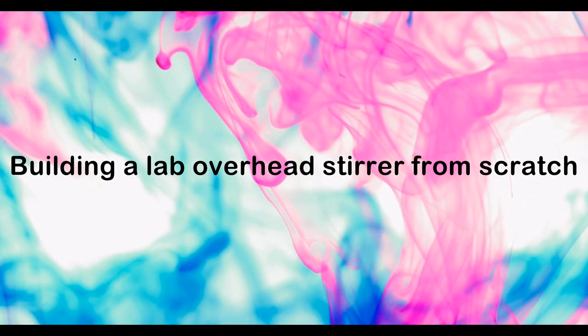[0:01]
High-quality overhead stirrers are usually much more expensive than magnetic stirrers. Therefore, I will show you today how to build such a stirrer yourself at a fraction of the cost.
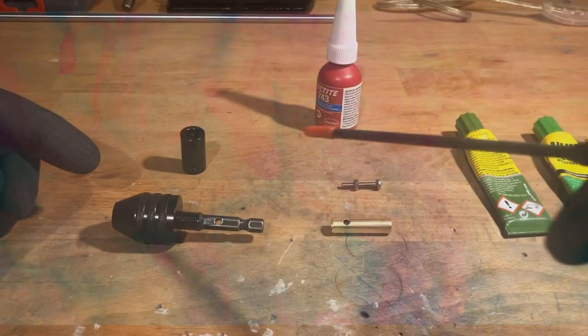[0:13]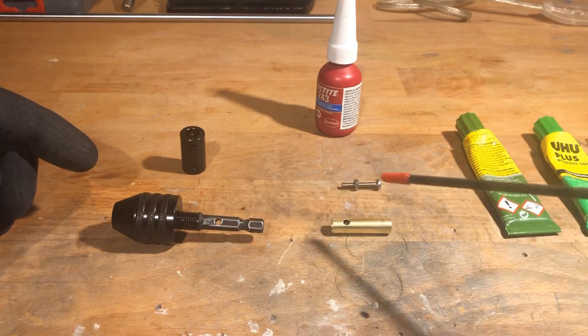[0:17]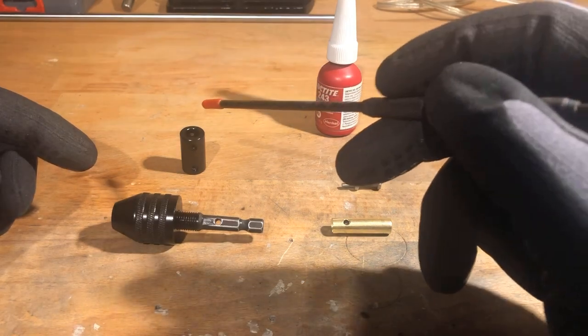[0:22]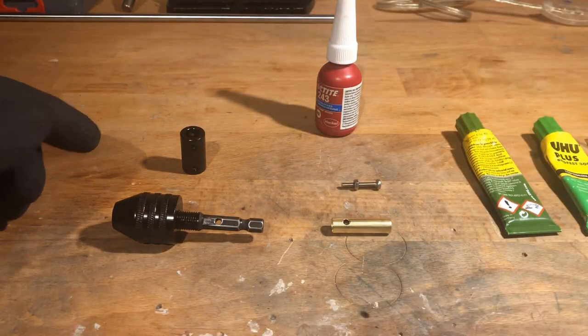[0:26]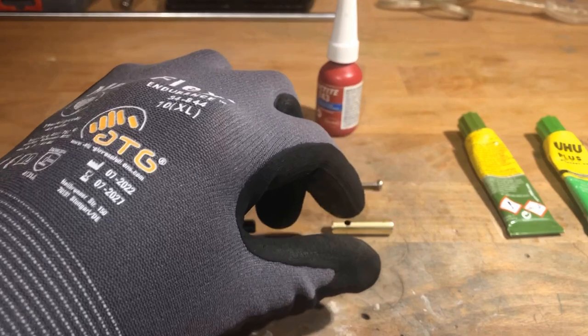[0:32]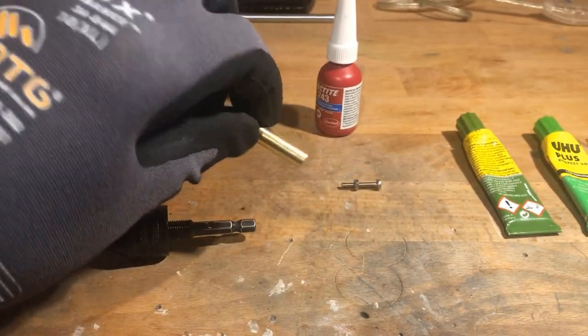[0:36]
To get started, I drilled a 3mm hole in the 1/4 inch hex shaft of a mini quick-release drill chuck. I also drilled a matching hole in a piece of brass tubing with an outside diameter of 8mm and an inside diameter of 7mm. The drill chuck is suitable for bits from 0.8 to 8mm in diameter and sells for a few bucks.
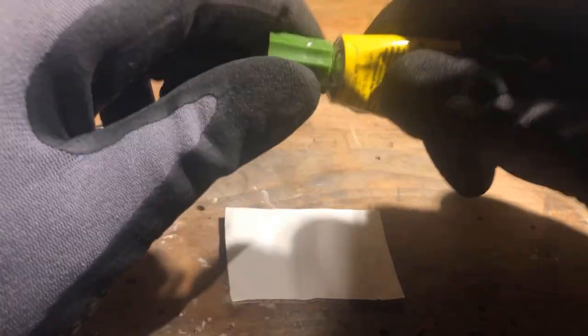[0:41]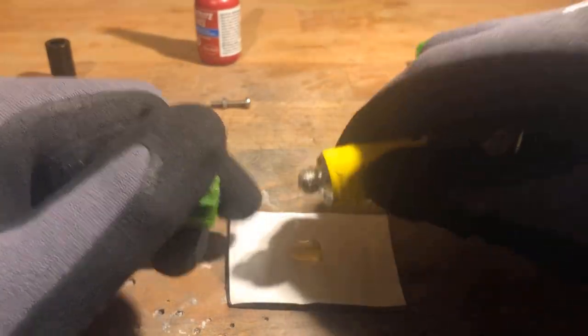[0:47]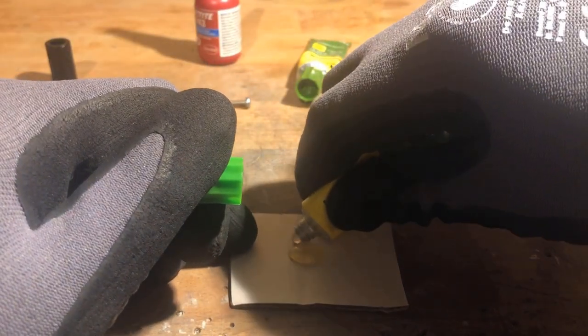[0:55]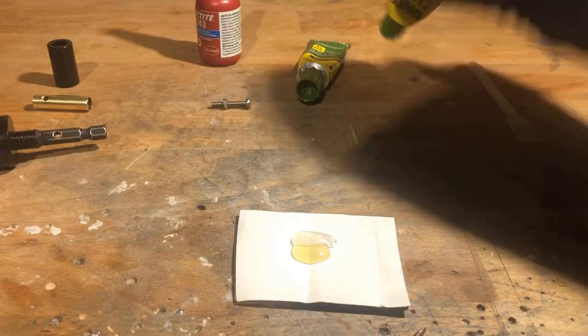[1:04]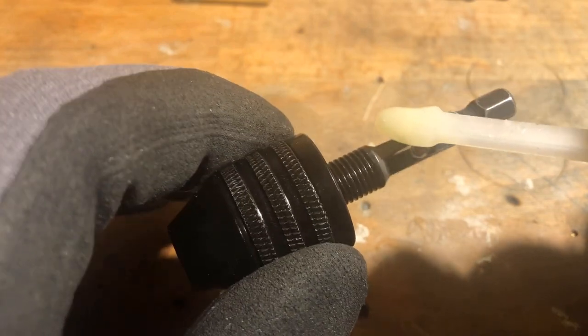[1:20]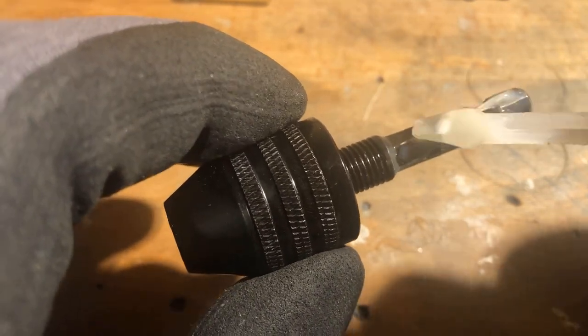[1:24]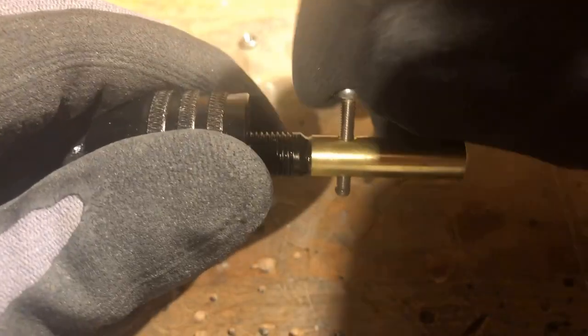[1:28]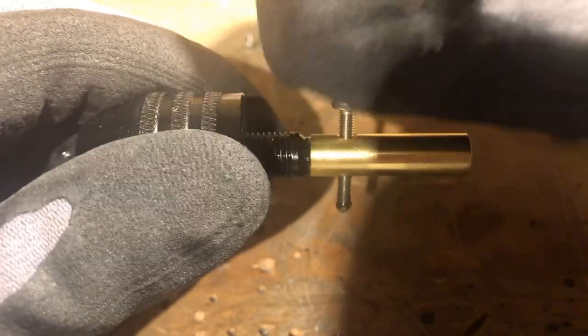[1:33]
The two-component epoxy resin is used to fill the gaps between the hex shaft and the brass tube. The connection of the hex shaft and the brass tube was then secured by an M3 stainless steel screw.
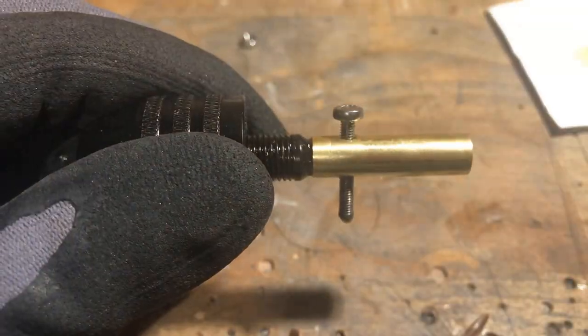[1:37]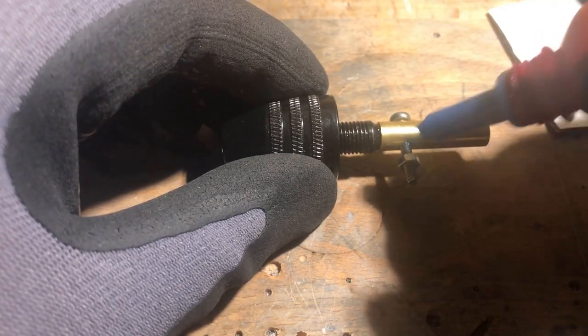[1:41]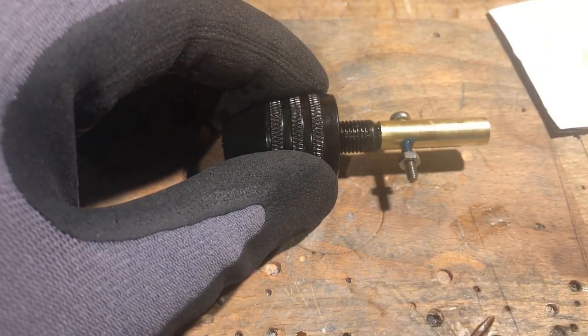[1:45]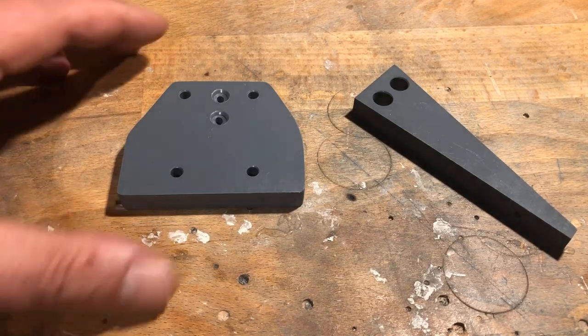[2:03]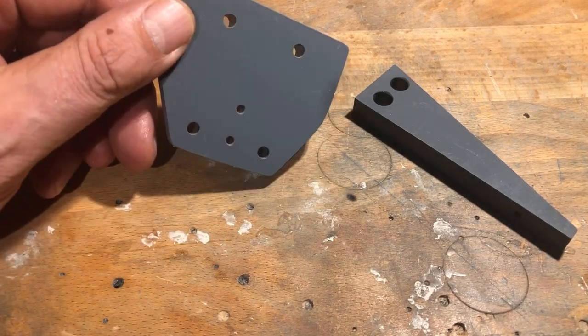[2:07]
Meanwhile, I collected or made more parts. Among them a 12 volts 130 rpm DC worm gear motor and a surface mount junction box made from ABS with the dimensions of 100 by 68 by 50 millimeters. These two parts were cut out of a 10 millimeters thick PVC sheet with a fret saw, sanded and drilled with appropriate holes.
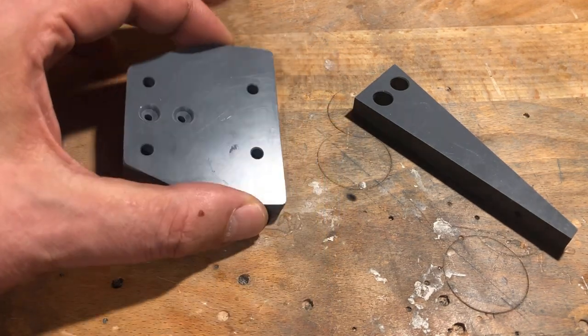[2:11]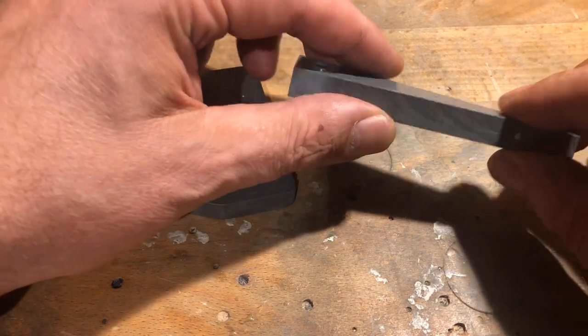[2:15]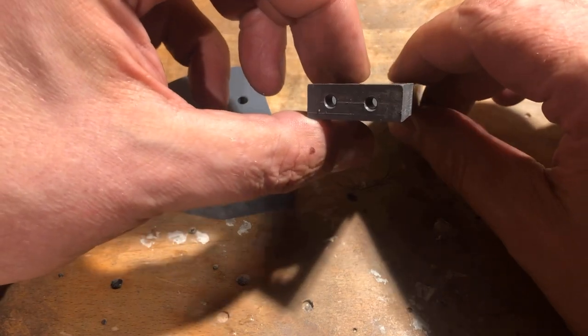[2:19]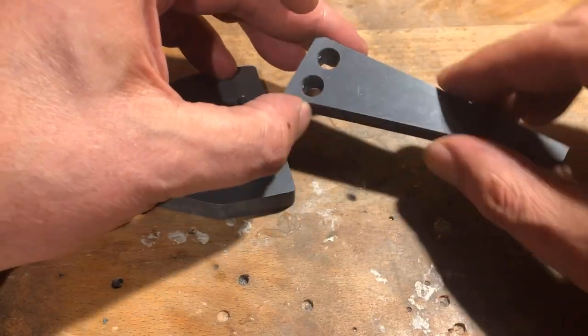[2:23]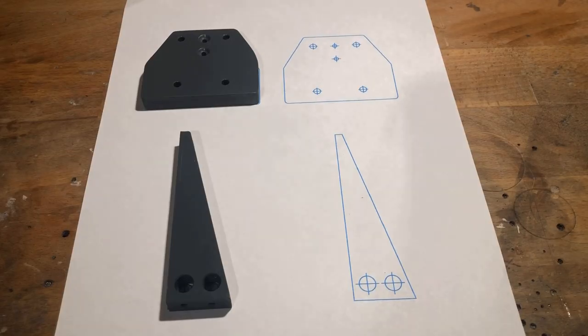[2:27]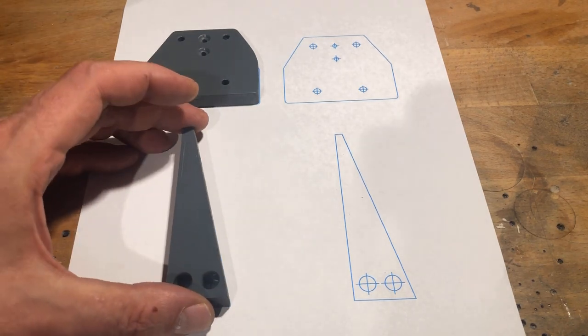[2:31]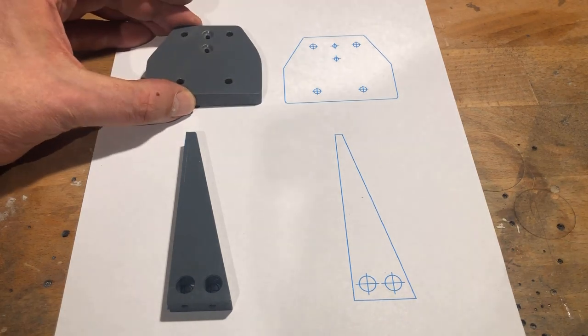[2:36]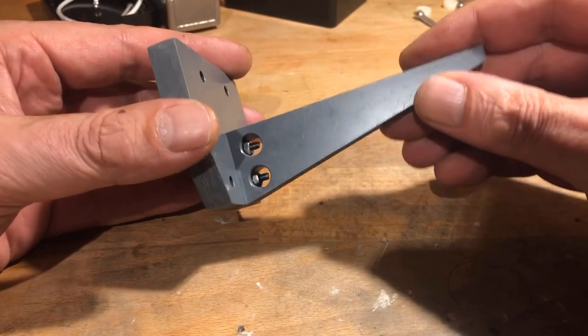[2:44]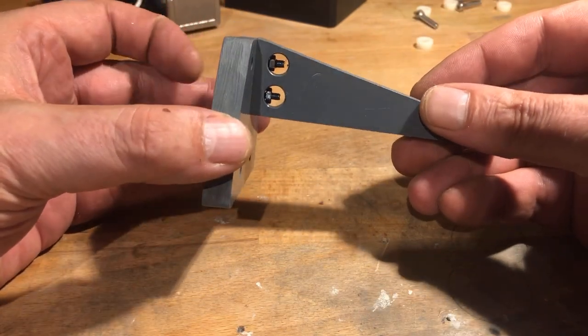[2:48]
As usual, I first created a drawing in Inkscape, printed it out in 1:1 scale and then spray glued the templates onto the PVC sheet. With this method, it is possible to produce parts with very good precision. The two parts were then bolted together using two M3 stainless steel flathead bolts and nuts and secured with thread locking varnish.
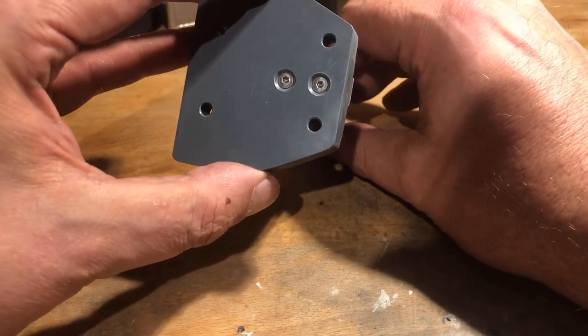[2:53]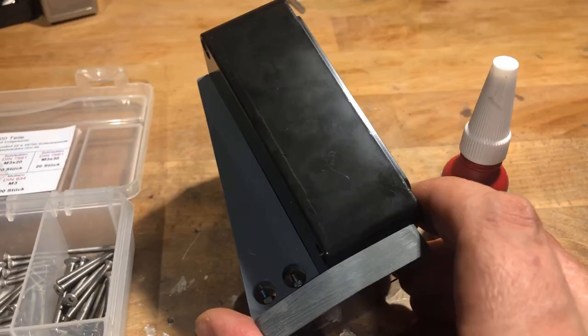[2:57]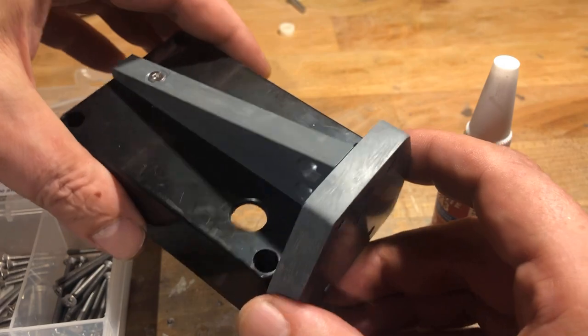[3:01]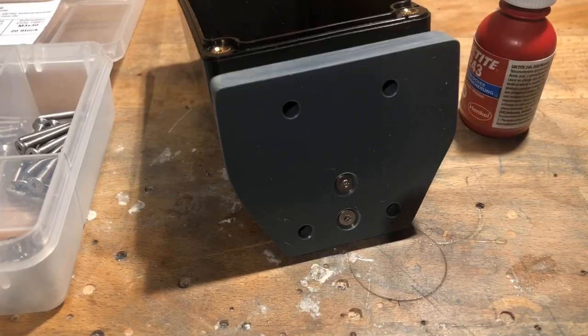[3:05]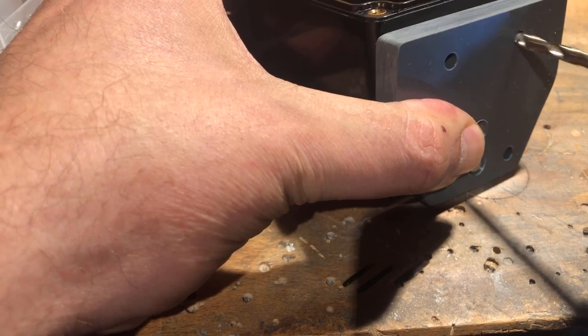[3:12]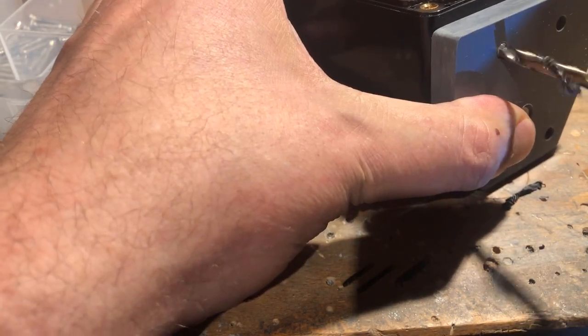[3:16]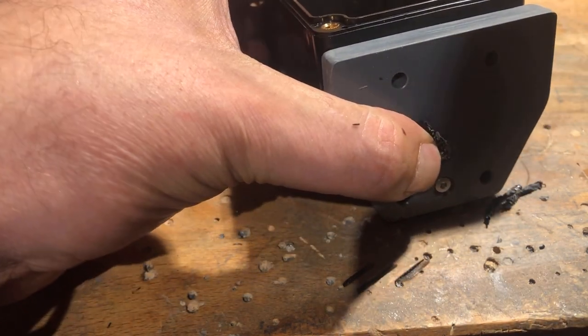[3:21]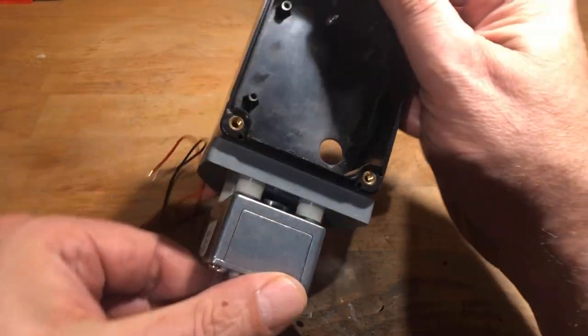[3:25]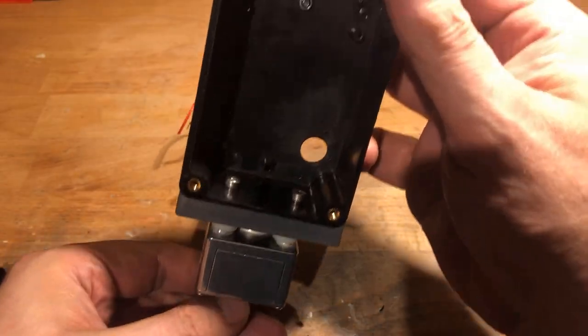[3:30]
Another M3 stainless steel flathead bolt and nut was used to screw the box to the bracket. Now two more mounting holes could be drilled into the box. Using 4 M4 stainless steel screws and 6mm nylon spacers, the box was mounted to the gear motor.
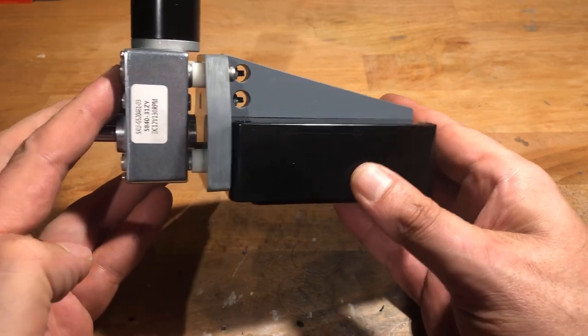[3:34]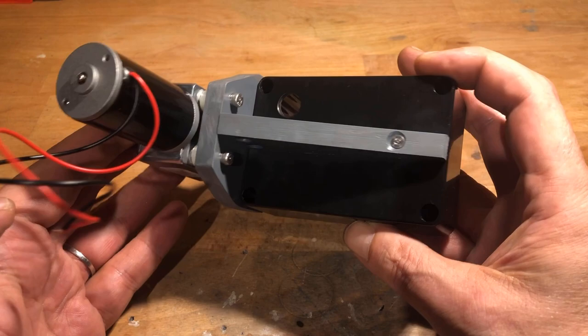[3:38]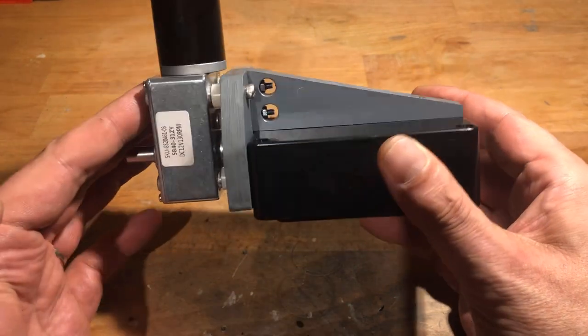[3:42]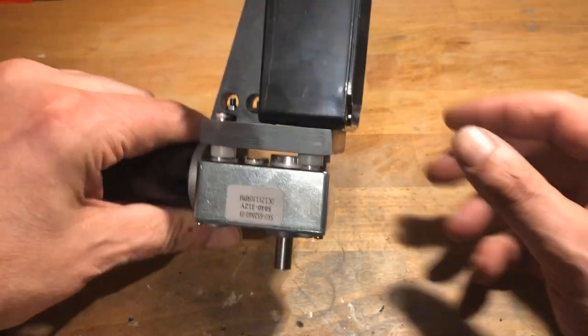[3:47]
By the way, for those who think 130 rpm is too slow, the gear motor is available with many other speeds. However, the maximum speed should not be too high to prevent liquids from splashing out when stirring.
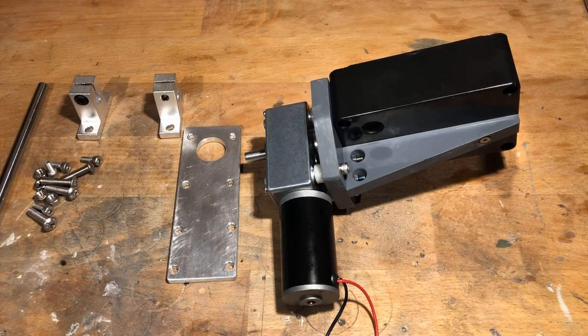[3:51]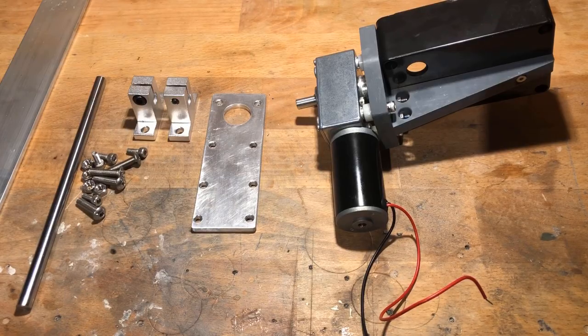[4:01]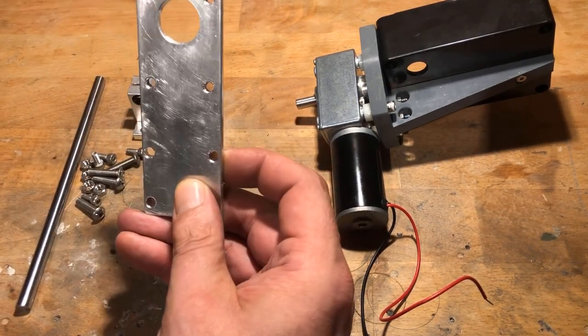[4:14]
Next, we need two 8mm axle brackets, an 8x200mm stainless steel rod, a custom bracket, 4 M5x20mm stainless steel screws and nuts, and 4 M4x10mm stainless steel screws. The custom bracket is made from a 4x40mm aluminum flat bar. Again, I created a cutting and drilling template in Inkscape and attached it to the flat bar with spray adhesive.
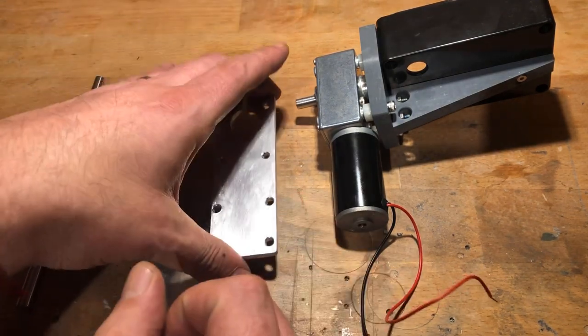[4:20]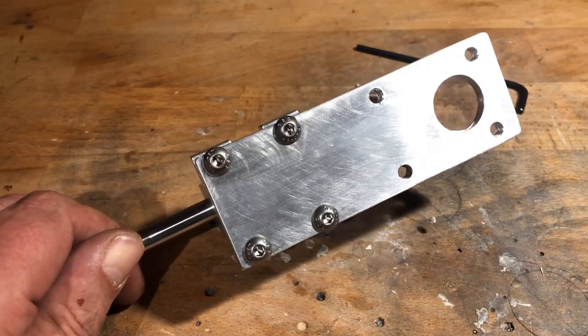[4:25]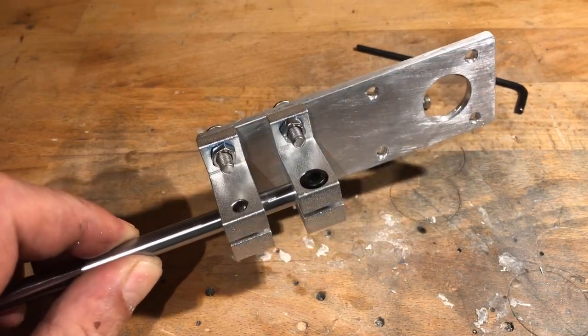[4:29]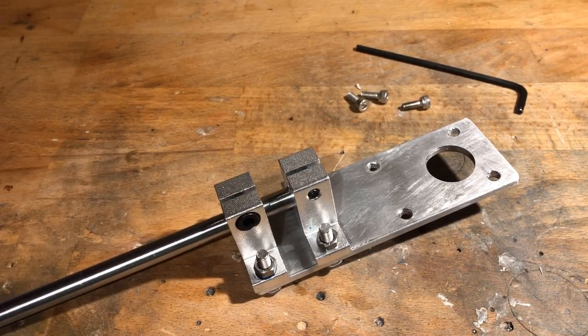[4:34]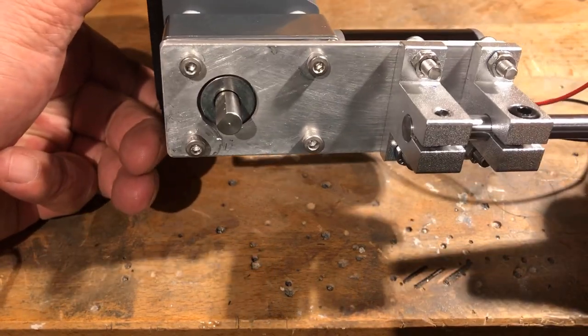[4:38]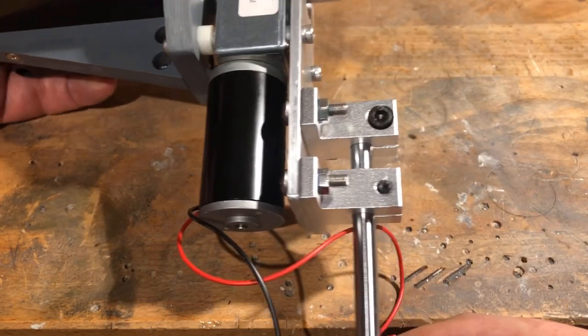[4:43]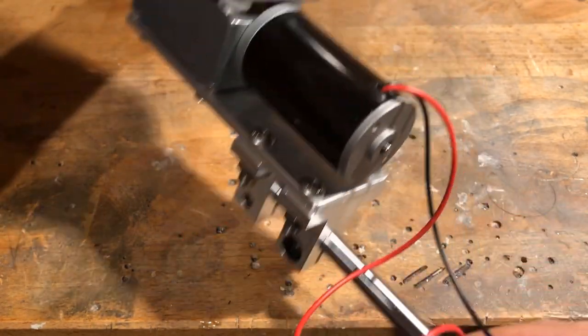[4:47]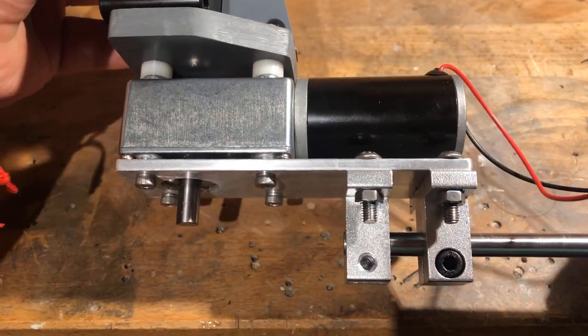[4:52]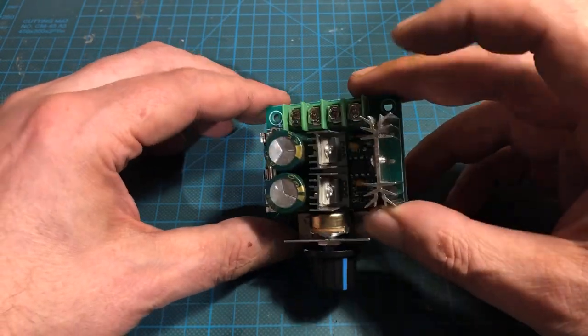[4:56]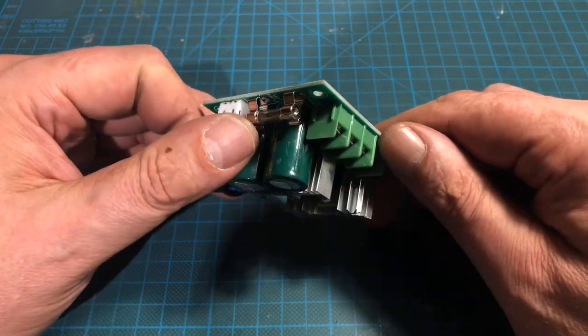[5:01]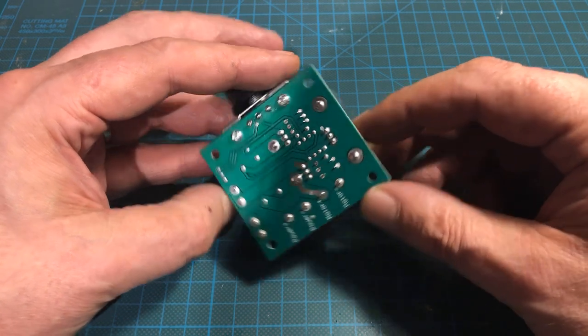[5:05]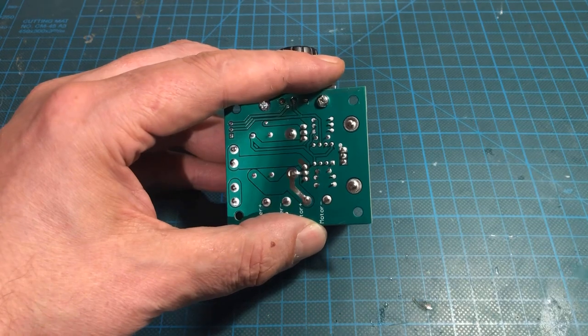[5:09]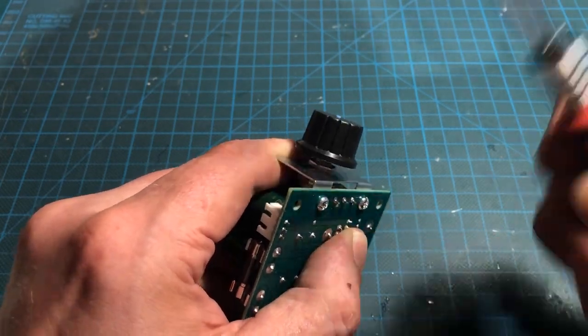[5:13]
I use a 10 amps PWM DC motor speed controller. The gear motor draws no more than 2 amps in operation, but since the motor driver is in a box, I don't want it to get hot, plus the stall current always has to be considered when dimensioning the motor driver. The potentiometer has to be removed.
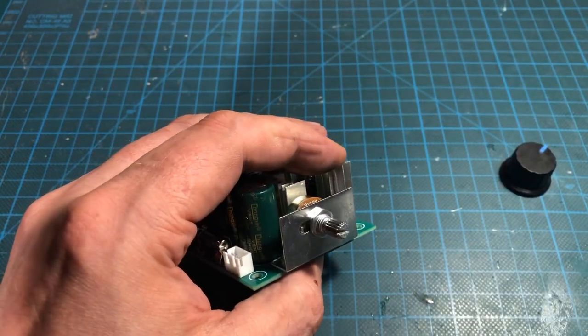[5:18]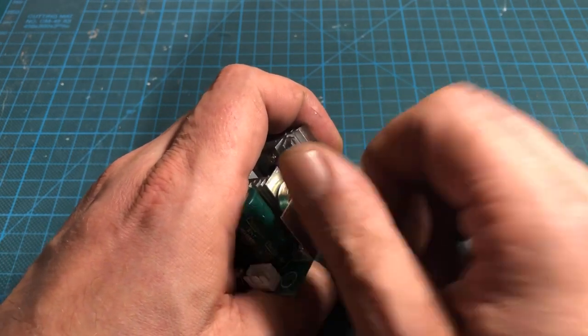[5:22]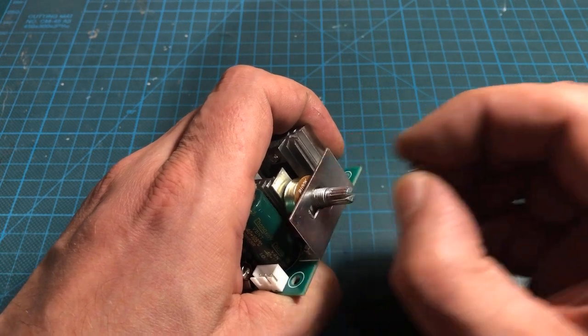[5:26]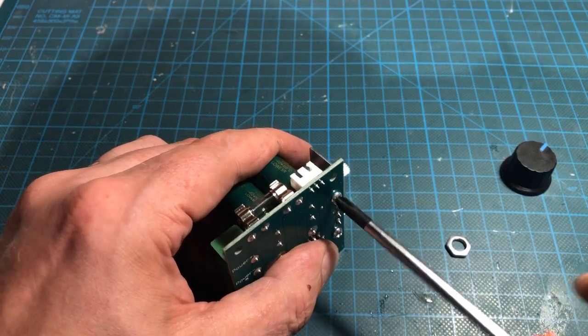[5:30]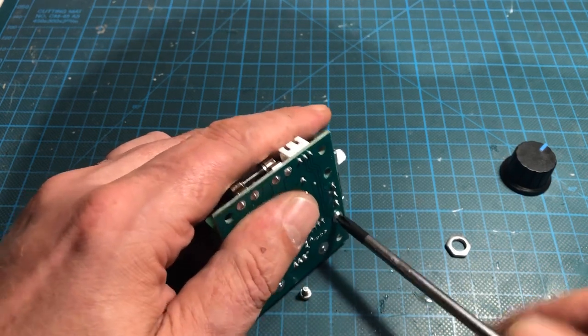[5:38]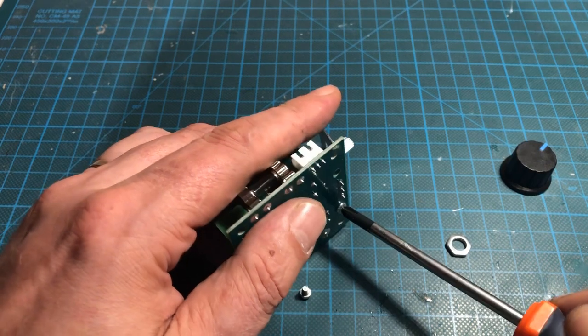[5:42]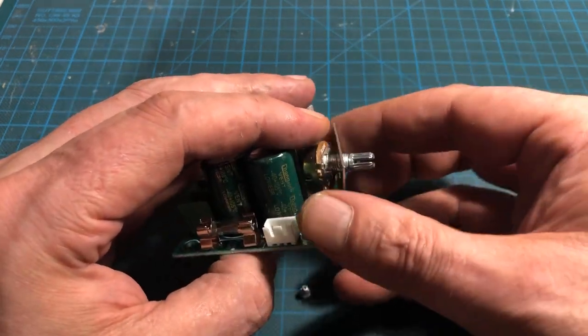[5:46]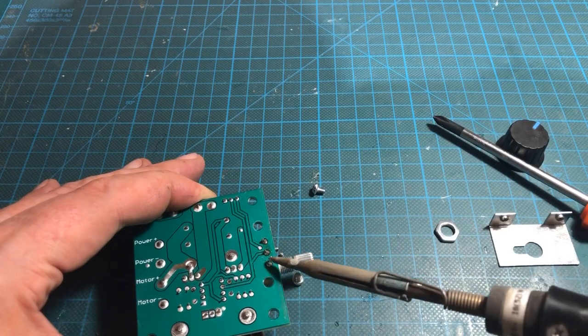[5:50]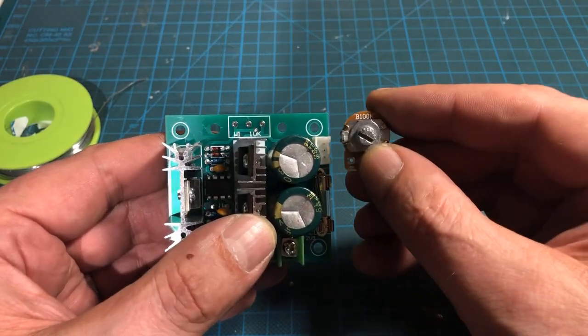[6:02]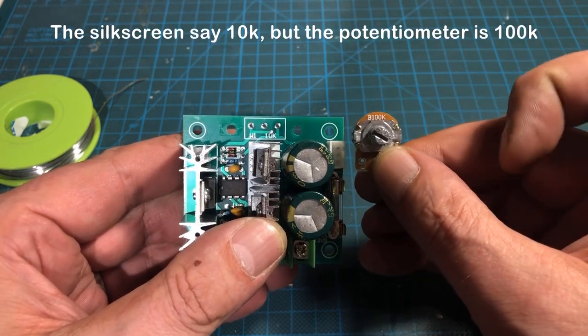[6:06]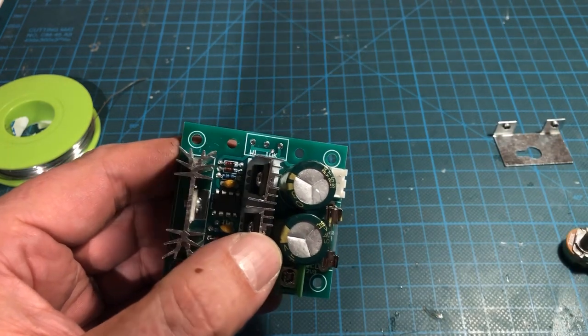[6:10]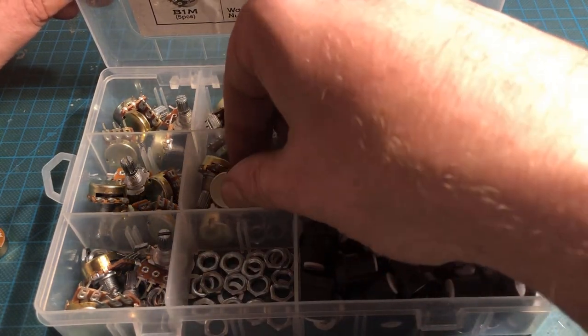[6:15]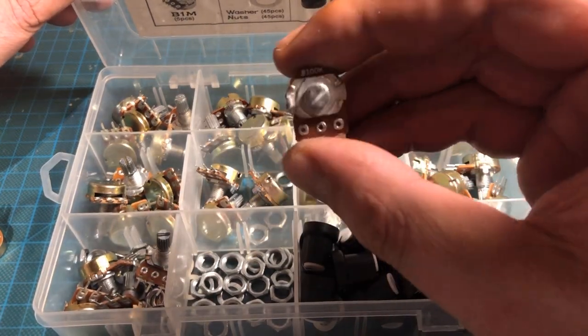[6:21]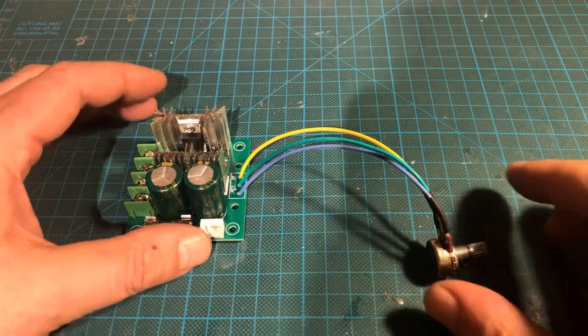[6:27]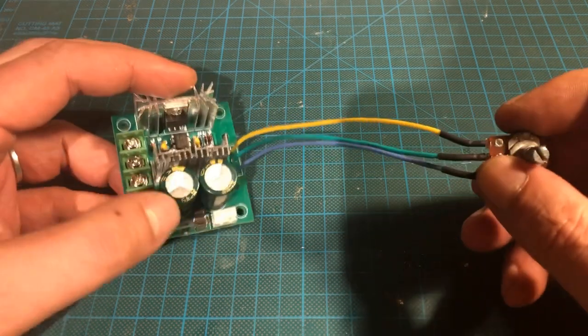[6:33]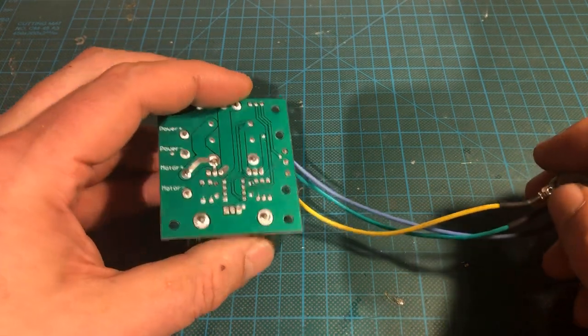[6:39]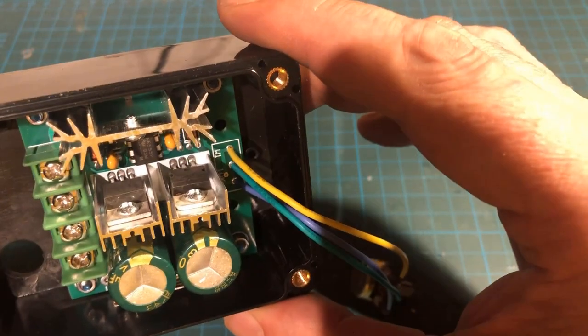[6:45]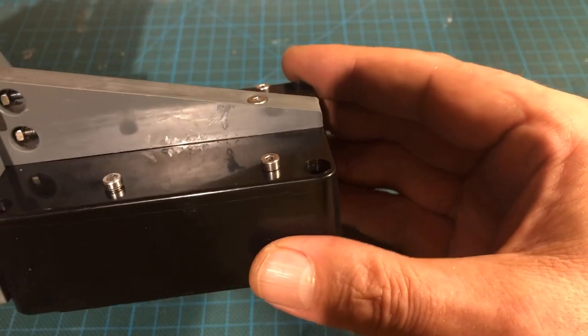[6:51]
Since I destroyed the potentiometer during desoldering, I used a new one. The potentiometer was then rewired. Flux residues were removed with isopropanol. After the mounting holes were drilled, I mounted the motor driver in the box. 4 M3x16mm stainless steel screws, nuts and 6mm spacers were used.
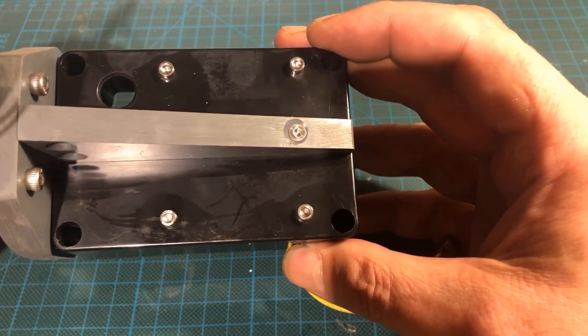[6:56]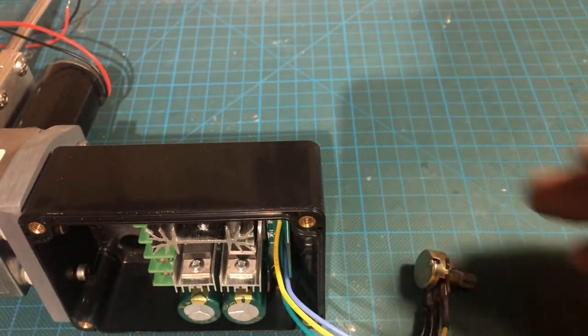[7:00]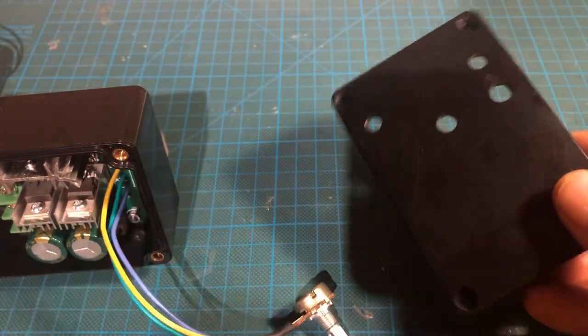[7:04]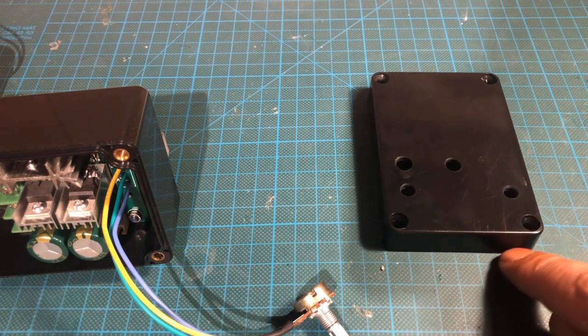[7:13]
Next, I drilled appropriate holes in the lid of the box for the on-off switch, the anti-clockwise clockwise switch, the operation LED, and the potentiometer. As before, a paper template has helped me with that.
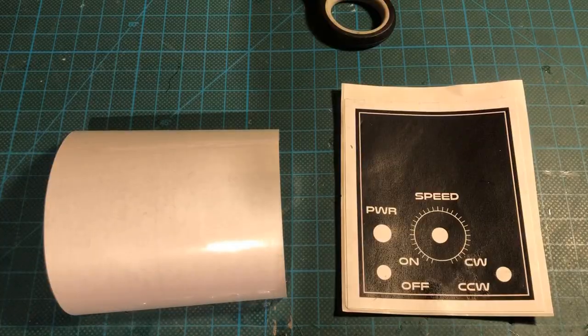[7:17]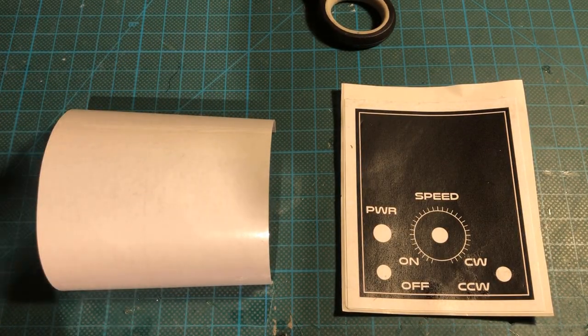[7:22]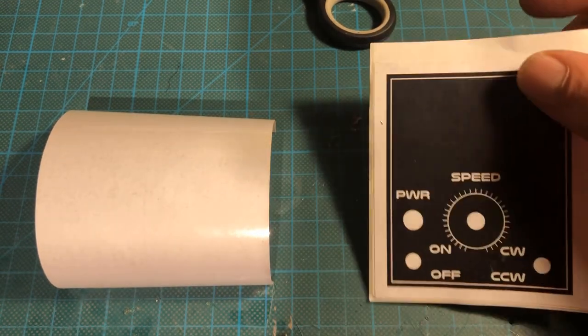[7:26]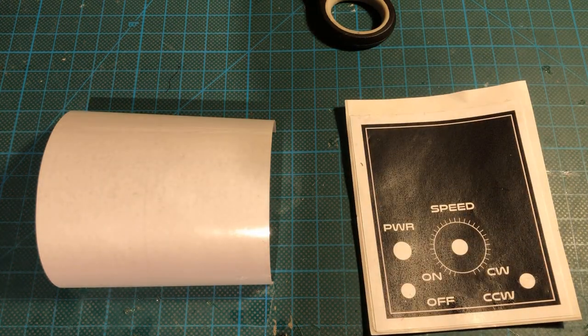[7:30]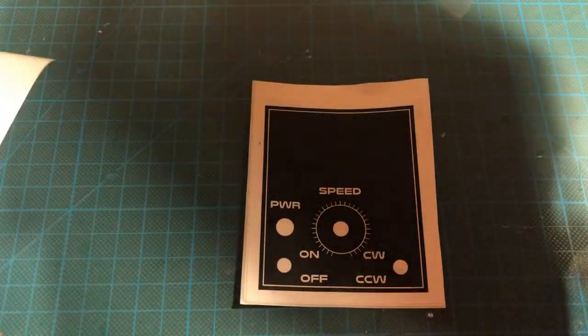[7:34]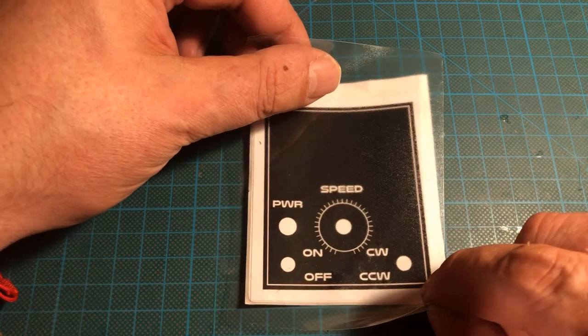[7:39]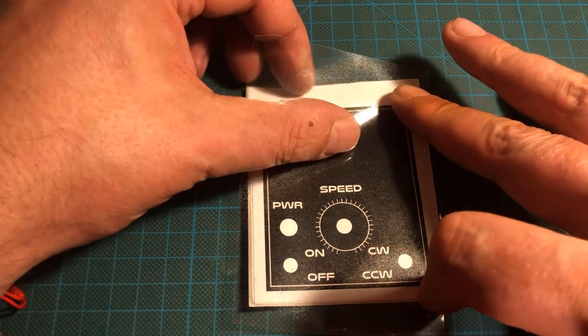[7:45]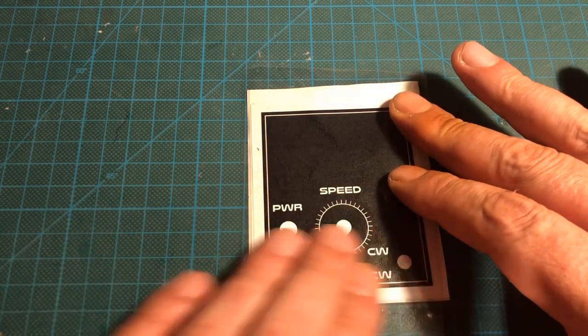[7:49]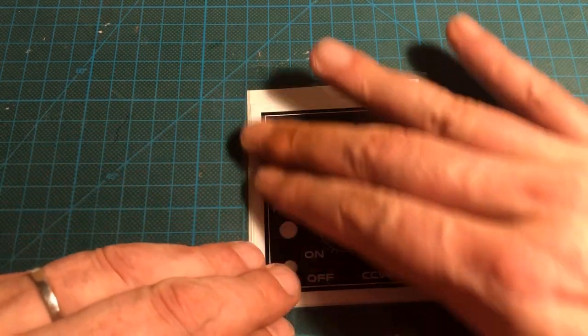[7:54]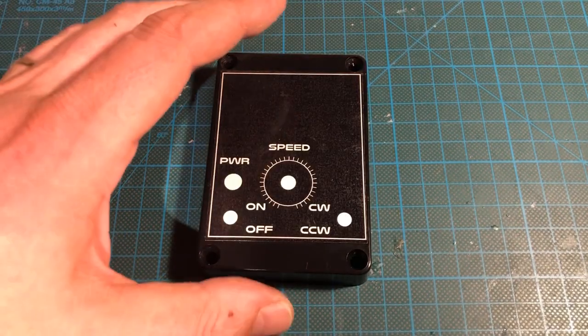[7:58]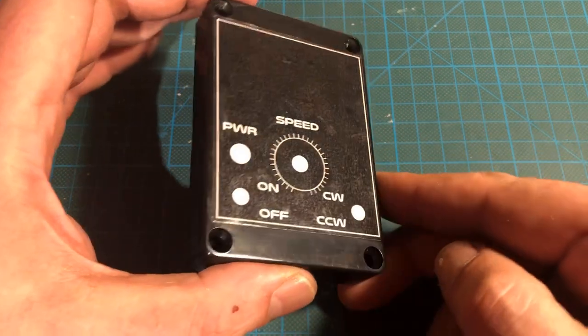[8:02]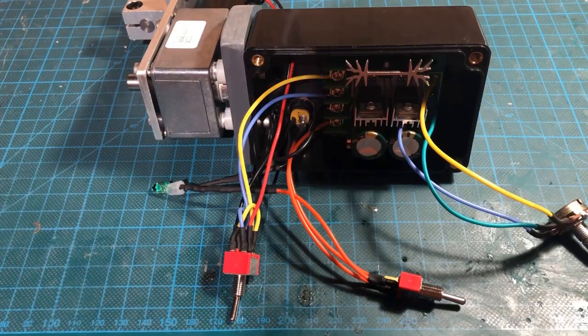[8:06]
To create the front panel lettering, it was printed on self-adhesive printer paper. It was then covered with transparent adhesive film for protection. After the label was cut out, I glued it to the box lid. Then I wired everything up.
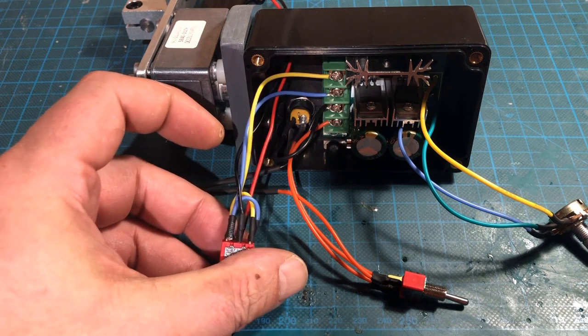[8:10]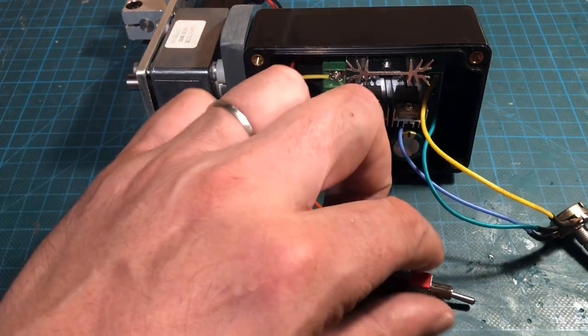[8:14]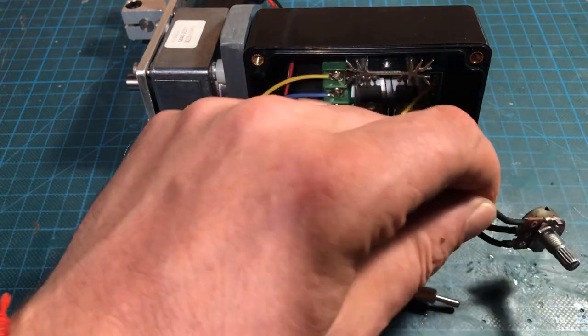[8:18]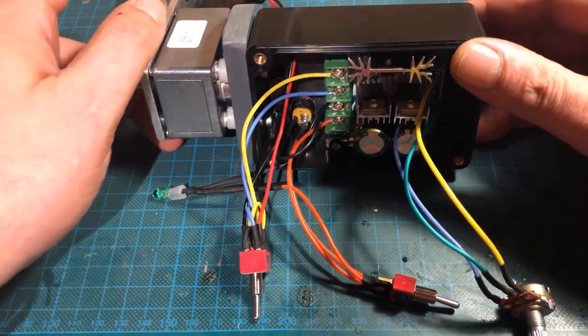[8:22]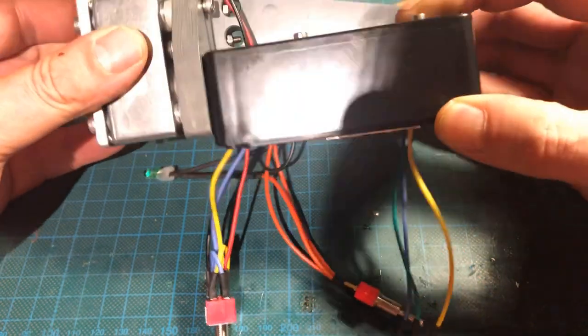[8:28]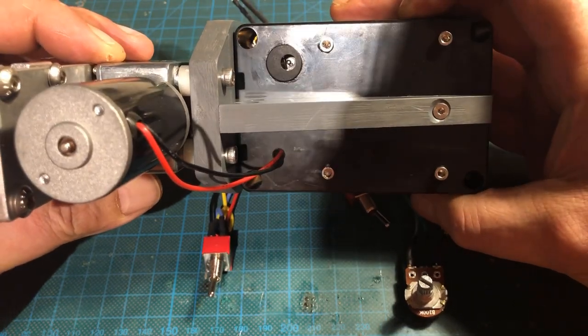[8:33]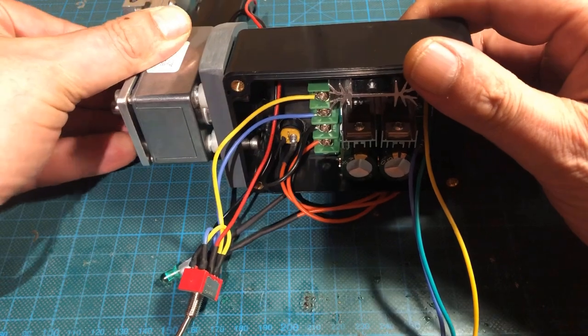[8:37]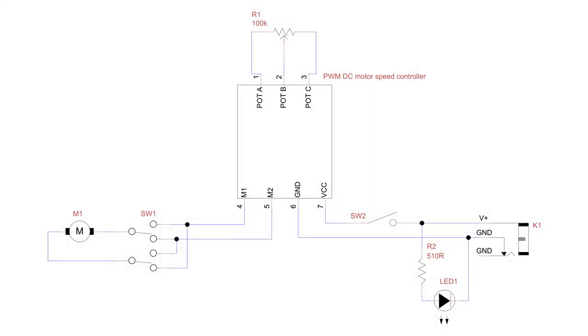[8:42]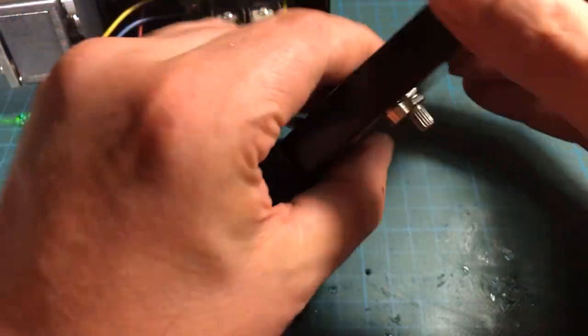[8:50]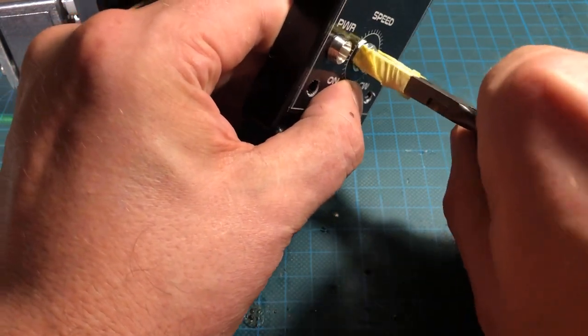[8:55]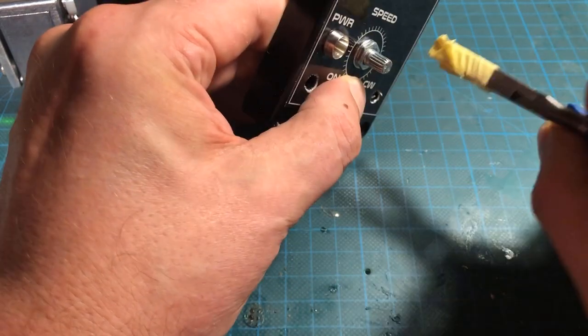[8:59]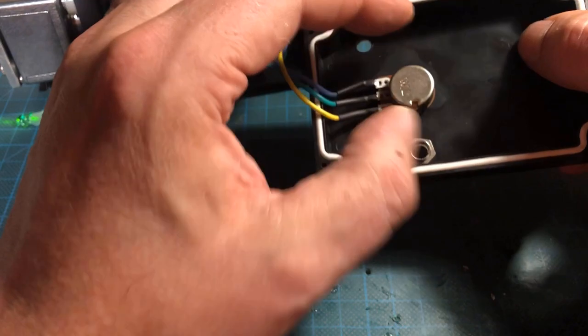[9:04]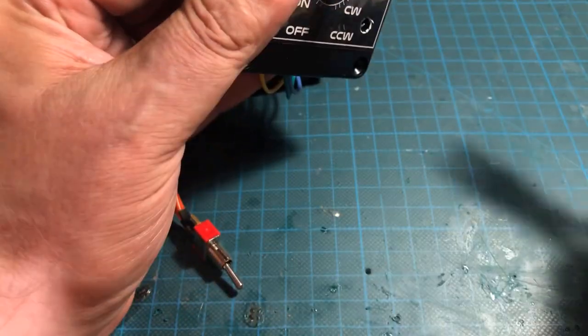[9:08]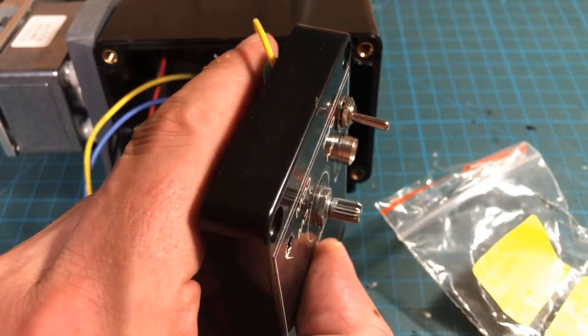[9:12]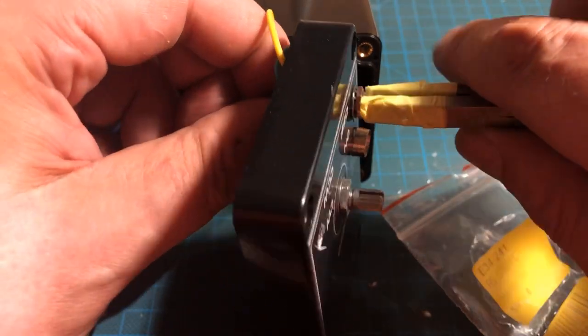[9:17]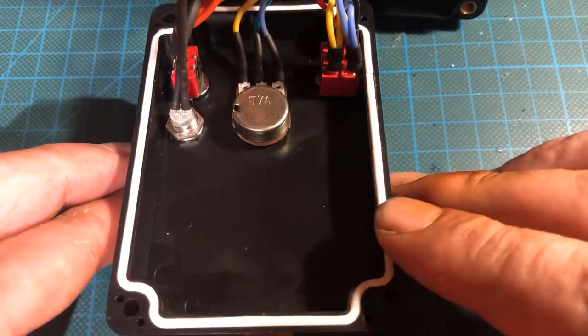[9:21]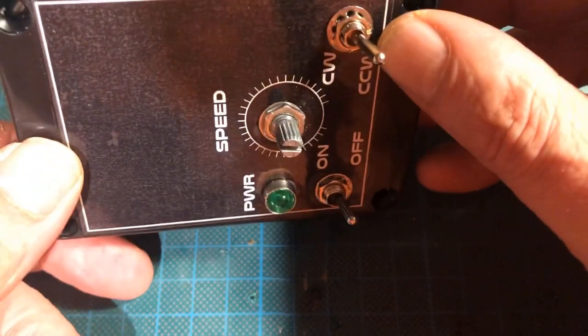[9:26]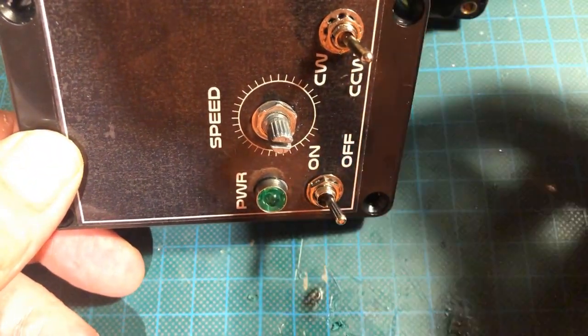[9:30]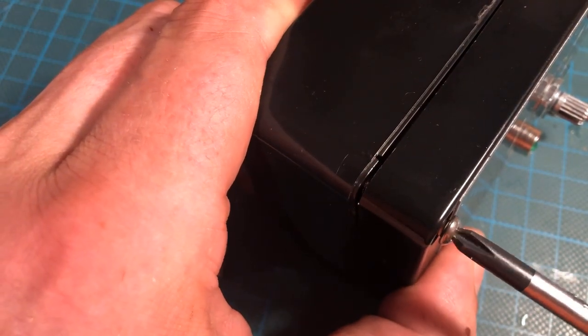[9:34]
The stirrer is powered by a 12 volts 5 amps wall wart with a standard 5.5 by 2.1 millimeters power jack. Now it was time to mount the LED socket, the potentiometer, and the switches. I ran the motor while doing this to see if the switches were in the right position. Via the supplied screws, the lid was finally screwed to the box.
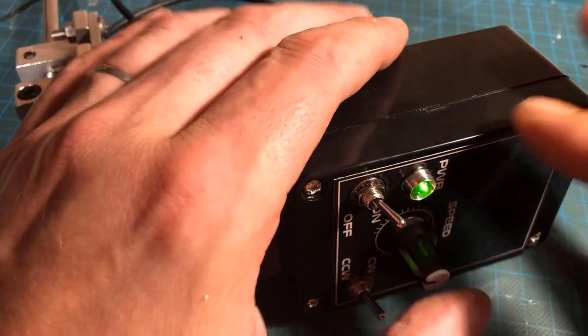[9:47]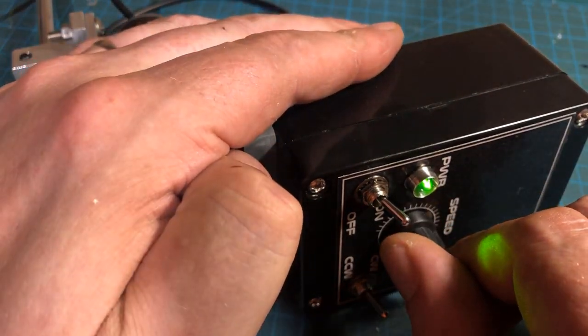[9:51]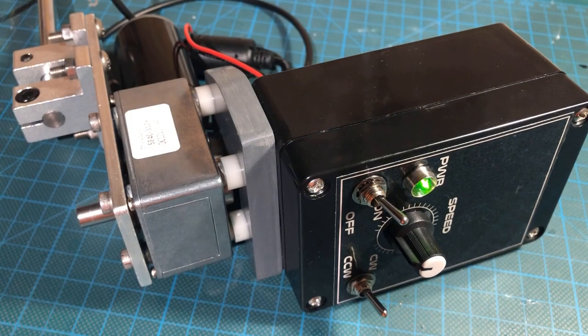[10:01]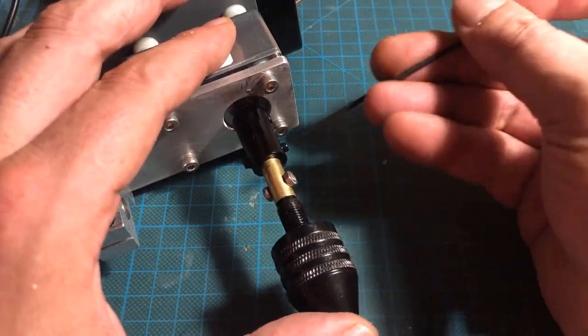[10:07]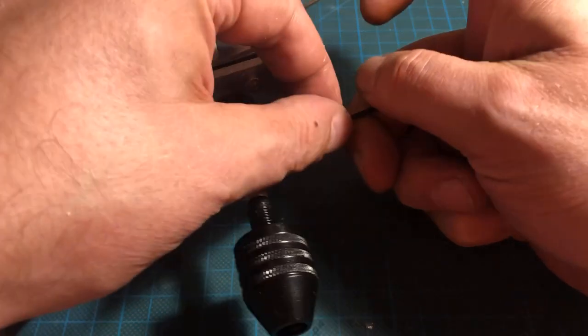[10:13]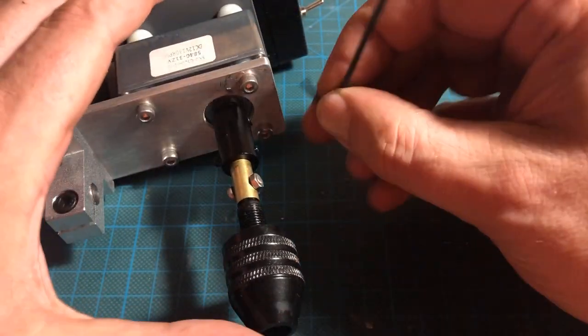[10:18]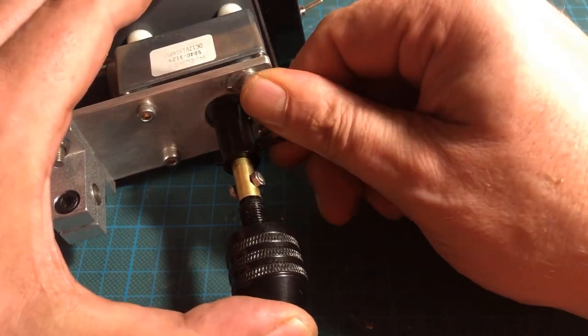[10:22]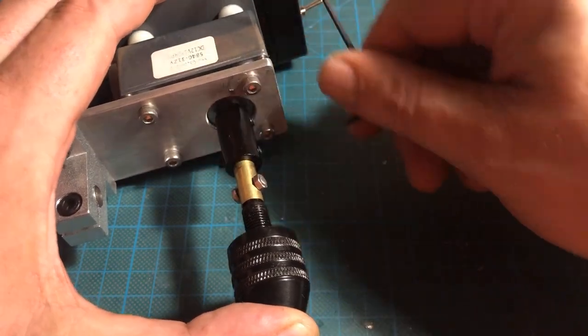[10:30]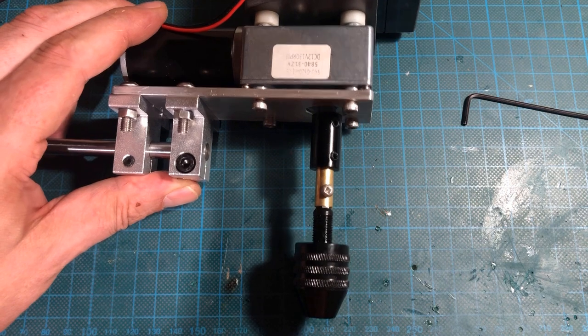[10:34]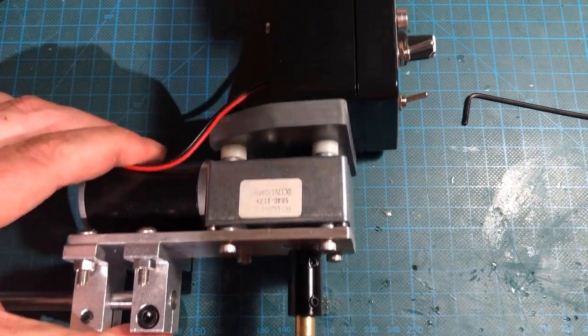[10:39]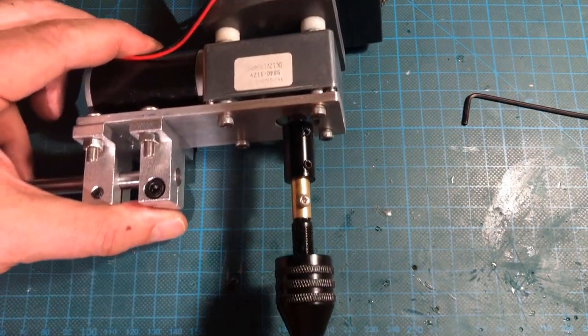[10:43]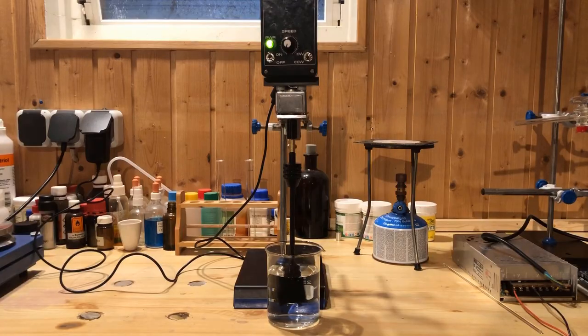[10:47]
All that remained was to attach the prepared mini quick-release drill chuck to the gear motor shaft using an 8x8mm coupling. The overhead stirrer can be mounted on any standard laboratory stand.